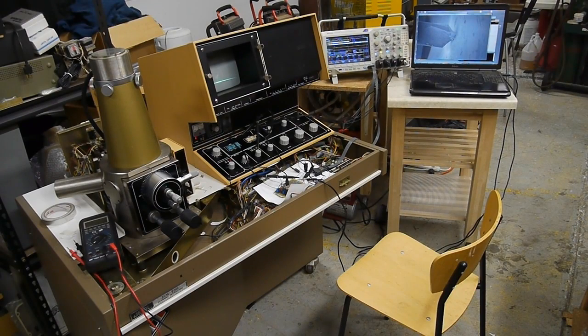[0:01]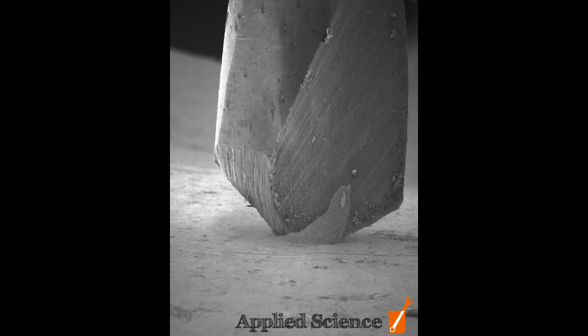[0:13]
Today on Applied Science, I'm going to describe how I built an image capture system for this vintage scanning electron microscope. This allows me to connect a modern computer to it and capture images directly. But first, let's take a look at an animation that I made today using this system.
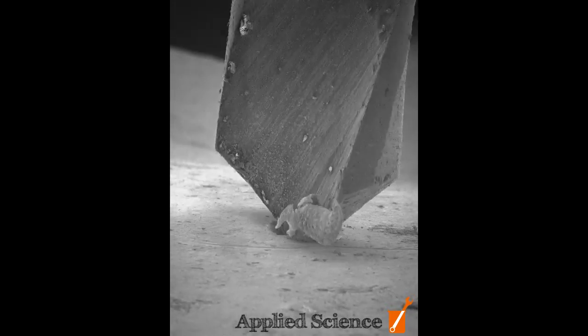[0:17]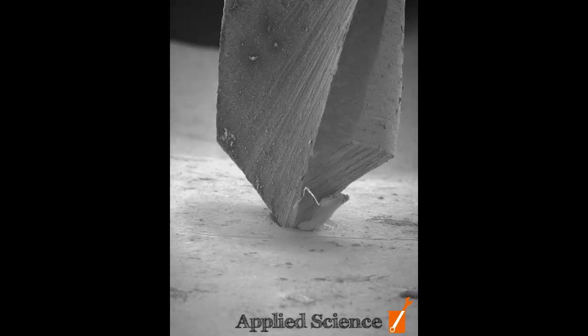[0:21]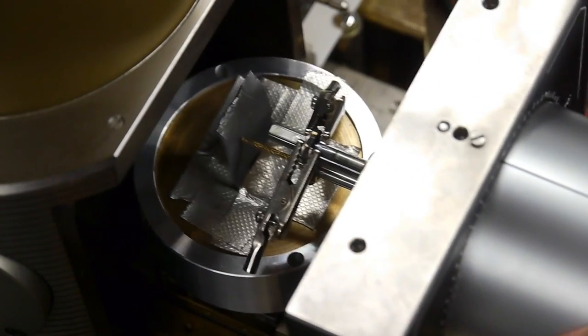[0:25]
This is a 2mm drill bit drilling into some lead metal. And I chose lead just because it's soft. I can't get a whole drill press inside the scanning electron microscope, so I'm basically using a makeshift drill press inside there.
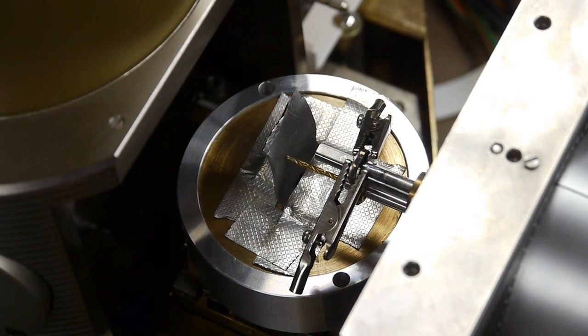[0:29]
So the basic idea of this image capture system is to start with an analog video signal that the SEM is outputting, and then digitize that using a microcontroller and send the digital values over USB to the computer. And then on the computer, I'm running a processing.org script that just displays the image in real time and optionally allows me to save the frames. So this way I can just, with two keystrokes, see an image and then save it, and then advance the SEM so I can get an easy sort of animation going.
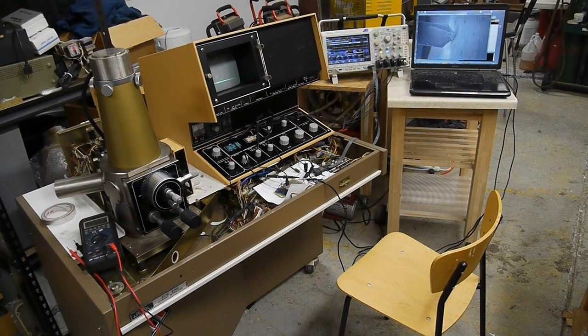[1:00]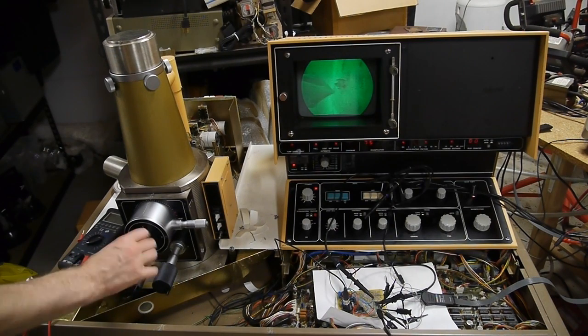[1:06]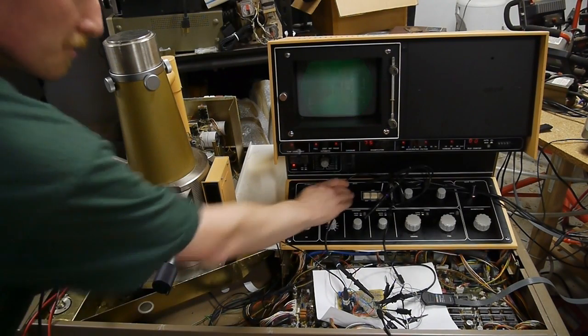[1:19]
Okay, so let's talk about that analog signal. This microscope is capable of capturing images in real time. So if I move the drill bit inside the microscope, you can see on the screen it's updating at full speed. It's about 30 to 60 frames a second. But if you want a really high resolution image, we have to slow the scan way down. So the scope comes with this setting, and as you can see, it's building up the image line by line, and the whole thing takes about 10 seconds.
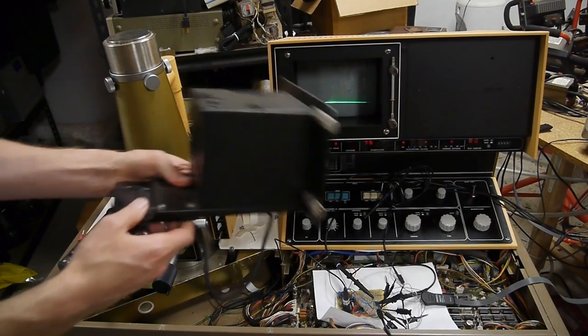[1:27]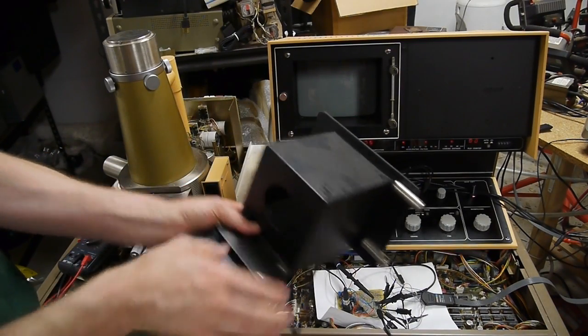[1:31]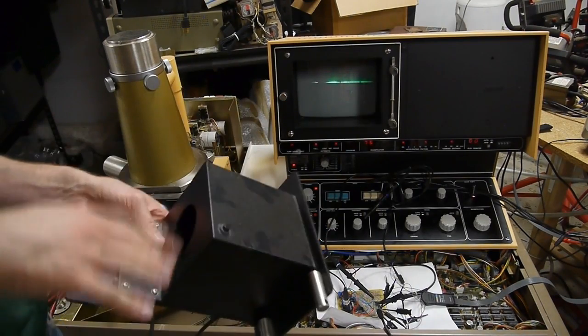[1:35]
So back in the day, the way that you would actually make an image out of that is to hook up a Polaroid camera to this and then mount the camera to the front of the screen and let it expose the film a line at a time. But of course, we have better technology than that now, so let's talk about today's solution.
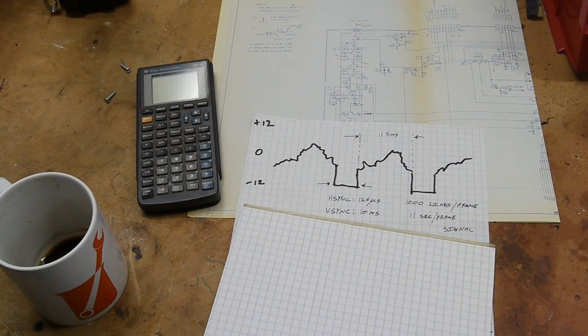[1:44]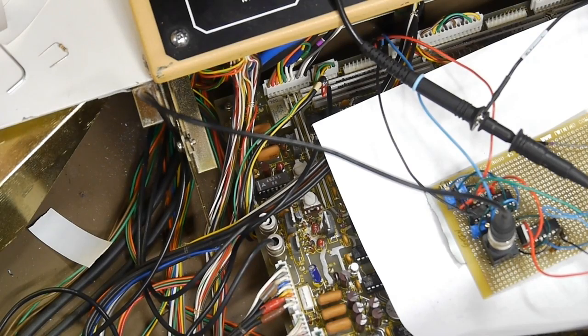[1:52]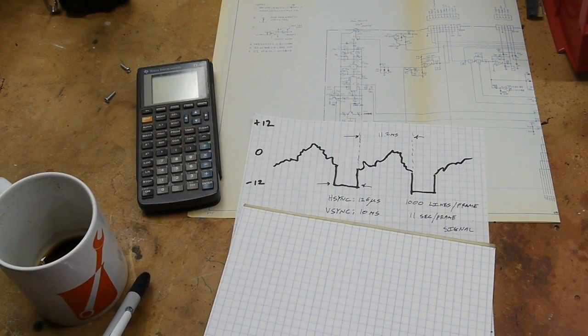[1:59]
Since the designers of the microscope thought that you'd be using a camera to capture this slow scan image, unfortunately there's no port on the side of the scope that has a signal we can use. So I had to go probing around on the circuit board with the oscilloscope, and with the help of the schematic here, found a signal that'll work just fine. It's actually quite a large range signal. It goes from negative 12 to 12, the reason being that the scope uses plus and minus 15 volt rails for its op amps, so that when the op amp is railed all the way, it puts out about negative 12, or at least in this case.
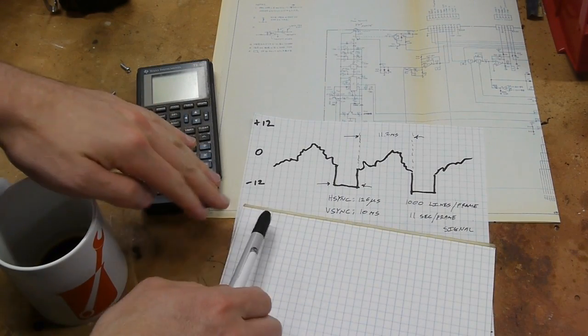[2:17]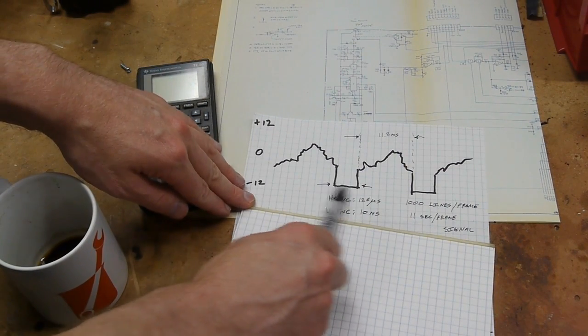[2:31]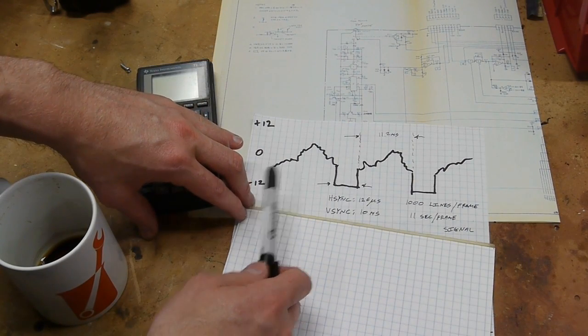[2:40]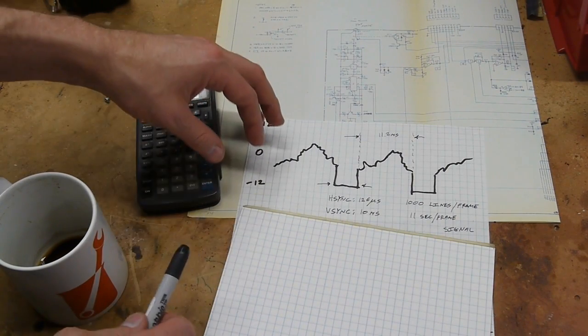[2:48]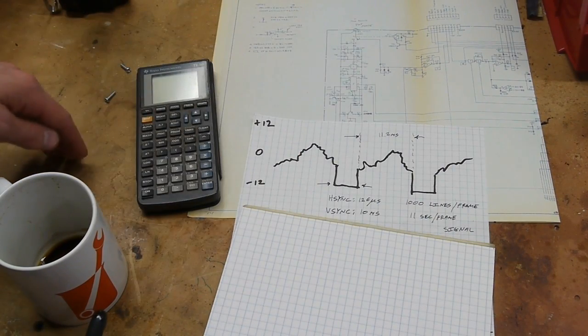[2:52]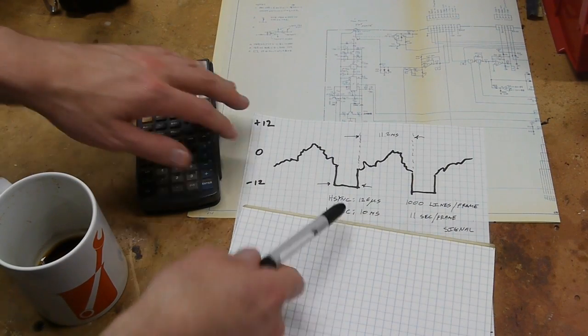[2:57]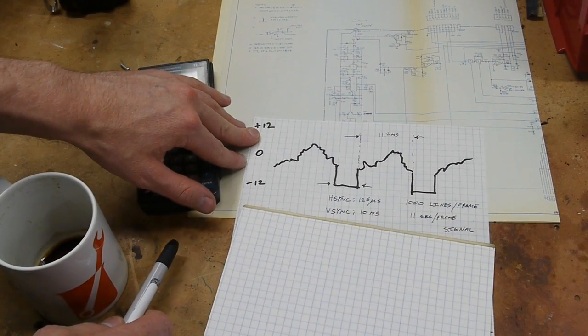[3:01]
The signal is composite, so basically it's a raster scan. It's left to right, top to bottom, just like you saw on the screen. And when it gets to the end of a horizontal line, there's a sync pulse. In this case, it's about 126 microseconds long. And during the sync pulse, the voltage is as far negative as it can go, about negative 12 volts. Then there's analog data for 11.2 milliseconds, and this repeats for every horizontal line. And when we get to the bottom of the frame, there's a much longer pulse of about 10 milliseconds. So if we know what the pulses are supposed to be, and we're listening to this signal, we can figure out everything we need to reconstruct the frame. This comes out to about 1,000 lines per frame, and so the whole thing takes about 11 seconds.
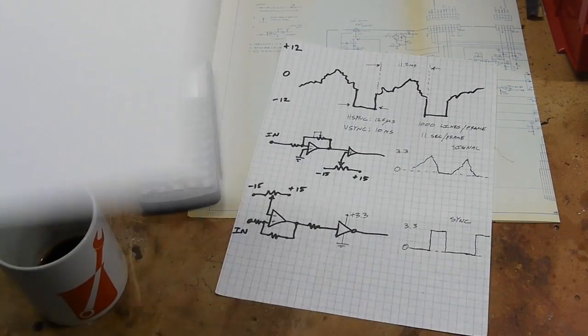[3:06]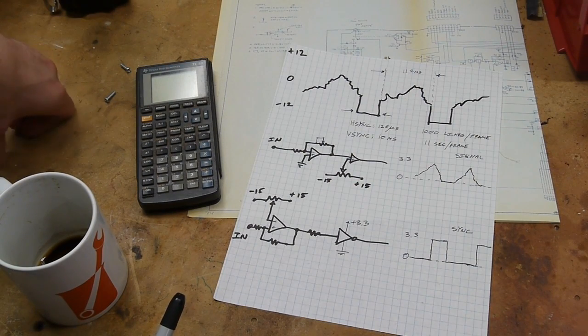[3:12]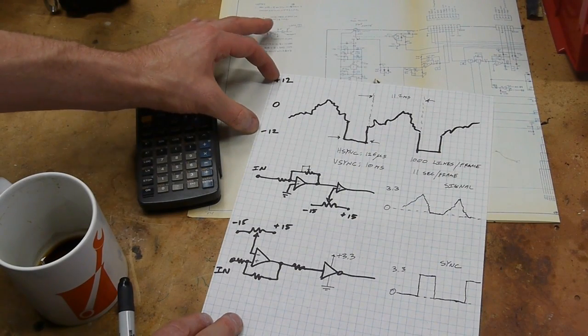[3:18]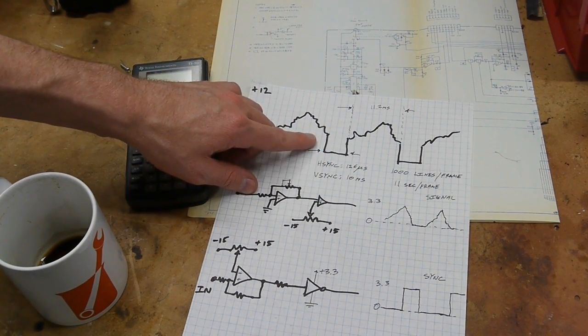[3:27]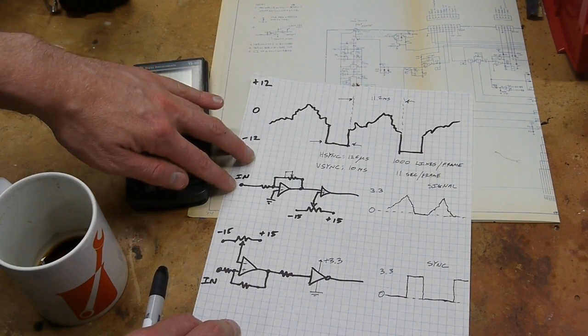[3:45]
So if we want to get this into a microcontroller, the first step is to voltage translate it into something that won't destroy the microcontroller. In this case, I'm using the Teensy LC, which is a 3.3 volt microcontroller. So what we want to do is translate this negative 12 to 12 volt signal into 0 to 3.3. And we also want to do something else. These sync pulses don't really carry any information about the image itself. I mean, it's timing information, but it's not visual information. So if we were to compress this whole negative 12 to 12 range down to 0 to 3.3, a lot of our dynamic range would be wasted on this pulse. So what I'm going to do is separate the signal into just video and then just sync.
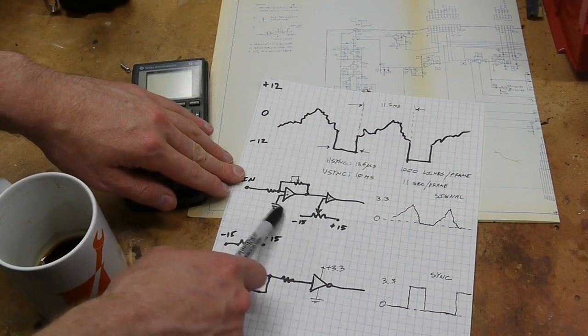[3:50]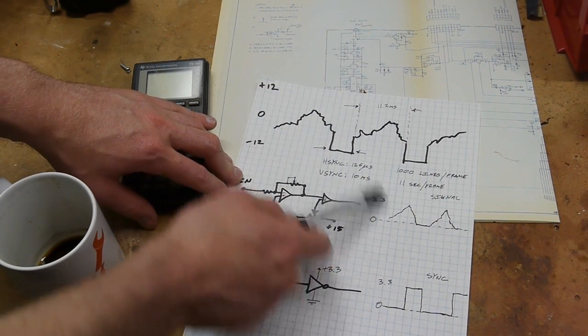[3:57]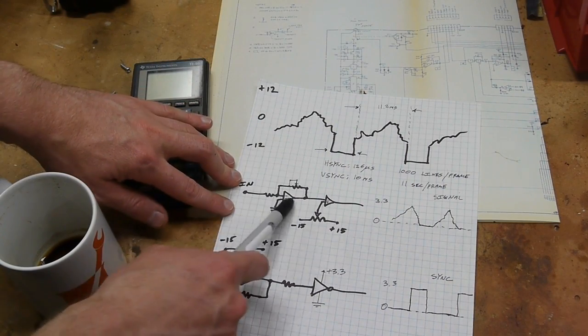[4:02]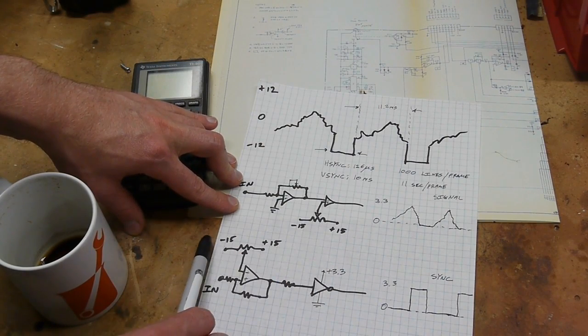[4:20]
So let's talk about the video first. I just ended up using two op amps. This could have been done with one, but with two, we invert the signal and then invert it back so that the sense of the signal is the same, not that it makes a huge difference, but whatever. So this first op amp is set up as a reducer. Usually you configure op amp circuits to amplify signals, but in this case, we're actually attenuating. And then the second op amp is an offset. So if we put the positive input on a potentiometer from negative 15 to plus 15, we can dial up where we want the offset to be.
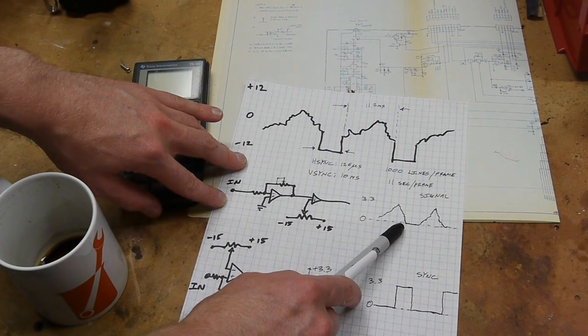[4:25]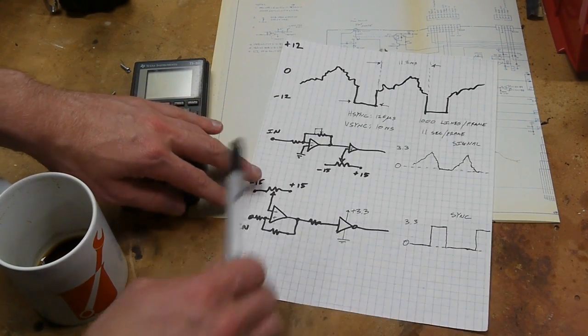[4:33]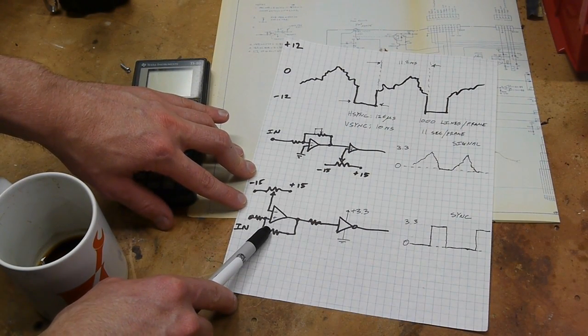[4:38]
So after these two, we get a signal that is just the video data, hopefully taking up as much dynamic range as possible, 0 to 3.3, and the sync pulse is not really there anymore. Then to recover the sync pulse, I have another op amp set up as a comparator.
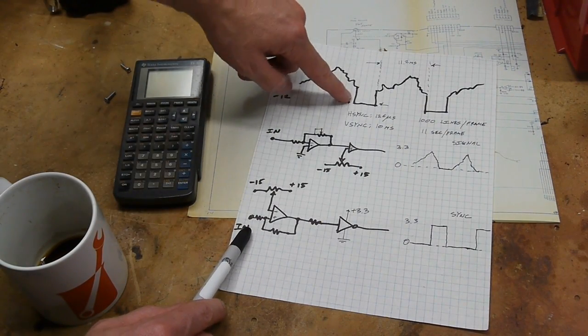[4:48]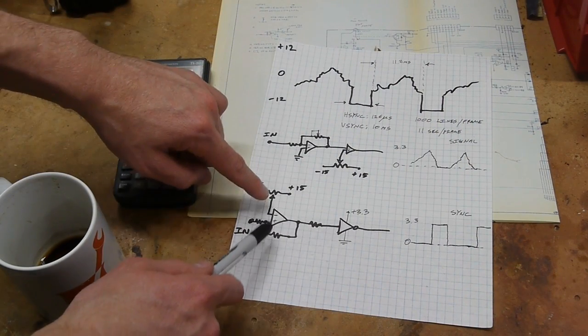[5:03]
So its negative input is a fixed voltage between negative 15 and 15, and then there's a little bit of positive feedback so that when the signal goes below the threshold, and I set the threshold to be something like, you know, negative 11. So as soon as this thing gets down to its most negative voltage, we know we have a sync pulse. And this comparator quickly snaps over. Now, remember that this comparator is still using plus and minus 15 volt rails, but we want to get the signal to be 0 to 3.3.
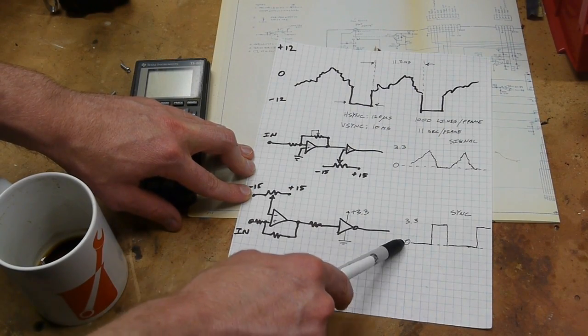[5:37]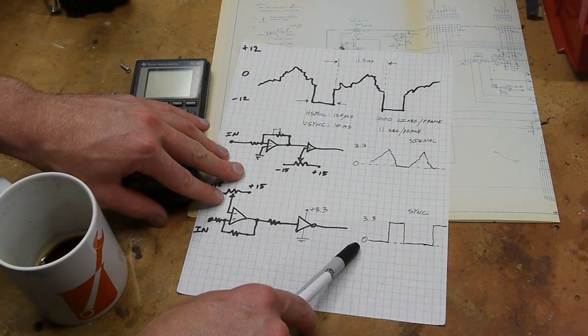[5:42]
So what I did is I used a 74HC series inverter, and the datasheet even says that this thing is set up with protection diodes specifically to convert high voltage systems into low voltage systems. So I powered the inverter with the 3.3 volt rail from the microcontroller, and then put a resistor here to limit the current, so that even though this thing is snapping around from negative 15 to 15 almost, when we get through the inverter, we're down to just 0 to 3.3. So now we have our digital sync signal, which we can put into a digital pin on the microcontroller, and then we have our analog signal, which we put into an analog pin.
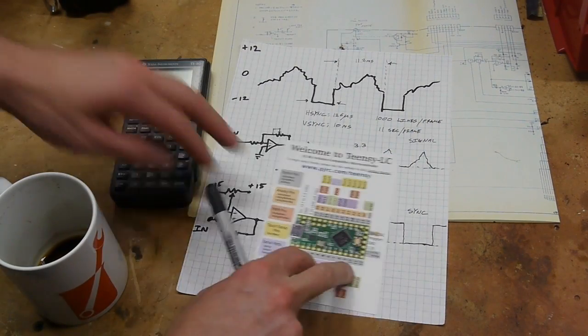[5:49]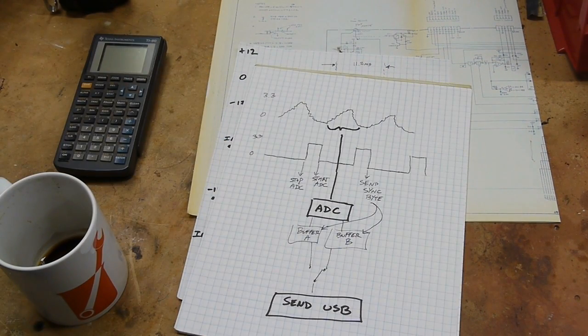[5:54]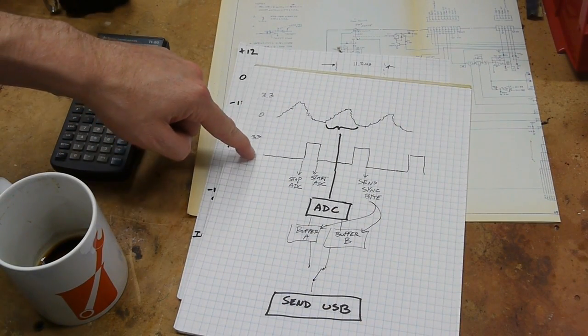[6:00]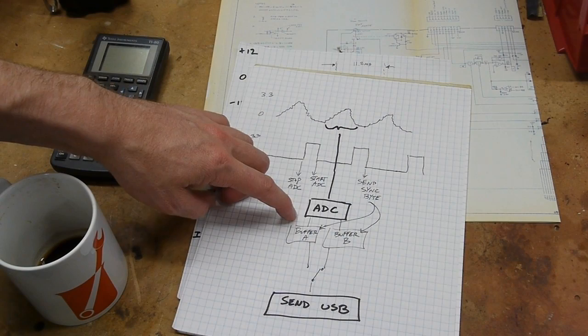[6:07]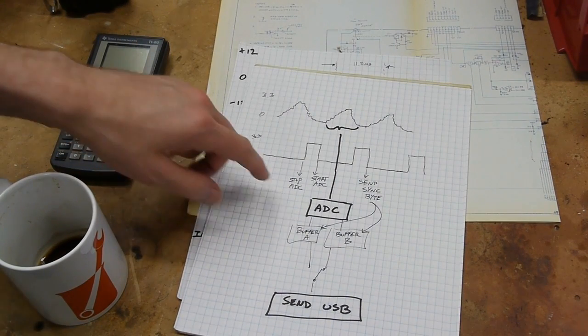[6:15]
And like I said, I'm using the Teensy LC, which gives us a bunch of options here. Here's a flowchart showing what the firmware does. We have our two signals in, the video analog signal and the digital sync signal, and we want to go through all this and have USB data out. So the way this is set up, the ADC is in free running mode, and it's running at about 142 kilohertz. Actually, it's averaging four samples, but we're getting a result from it 142,000 times a second. And what we want to do is stop the ADC at the start of a sync pulse so that when we restart the ADC, it will be nice and lined up with that falling edge of the sync pulse.
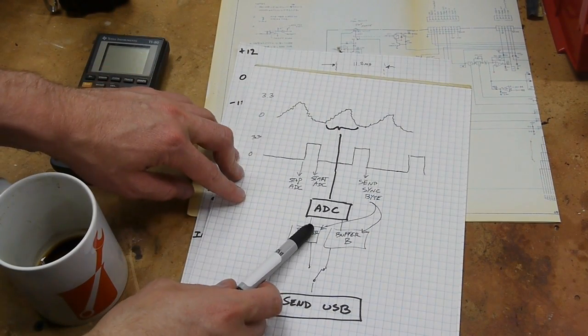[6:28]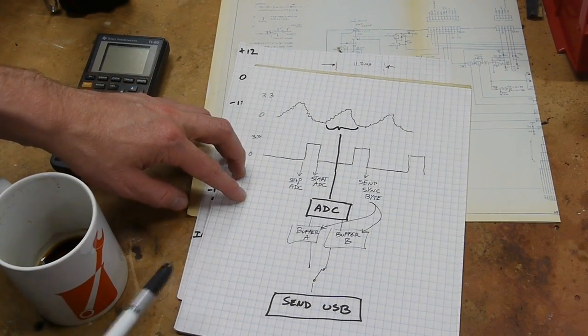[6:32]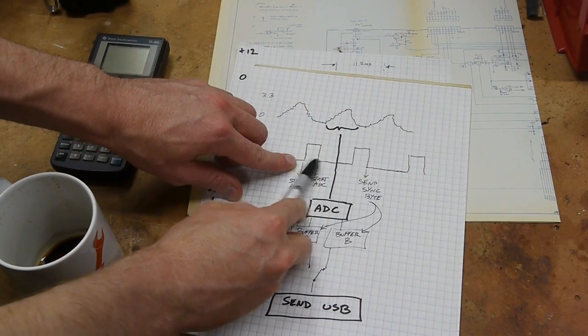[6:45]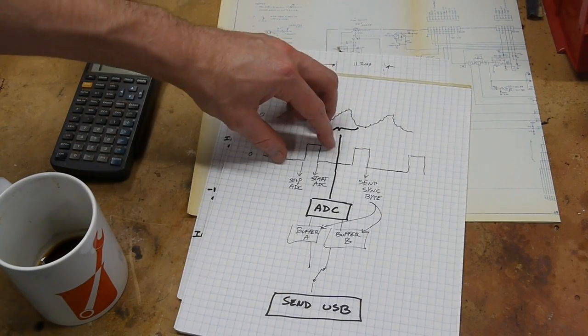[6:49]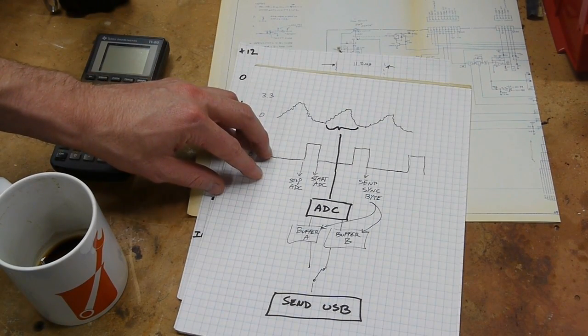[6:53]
Originally, I had the ADC free running all the time, and I tried to sync it up at the beginning of the pulse, but it didn't work very well because at certain stages of the ADC's function, you can't stop and restart it with a deterministic amount of time. However, if you stop the system here, then what we can do is just measure the pulse width using a timer function in the microcontroller, and then we'll know how long the pulse was, and we can restart the ADC and get very deterministic timing.
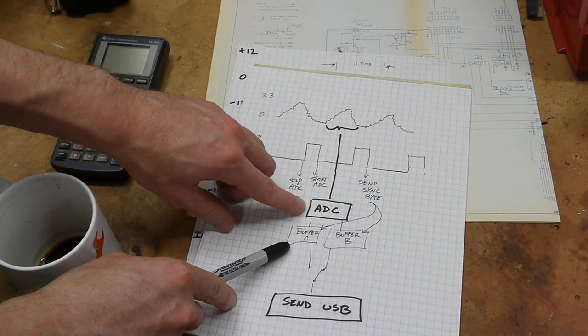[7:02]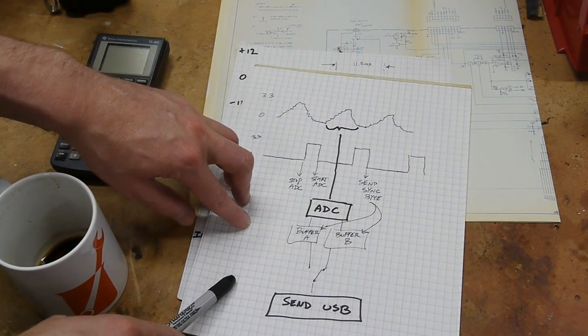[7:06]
Another trick I ran into is that since we have data coming from the ADC so fast, if we just filled up a buffer from the ADC and then sent that out over USB, we would end up with some contention there eventually because the USB would be wanting to send the same data that's being written in by the ADC. And I think you could implement this with a loop buffer, but I still couldn't quite figure it out. Since they're both reading and writing so quickly, you end up with some weirdness there.
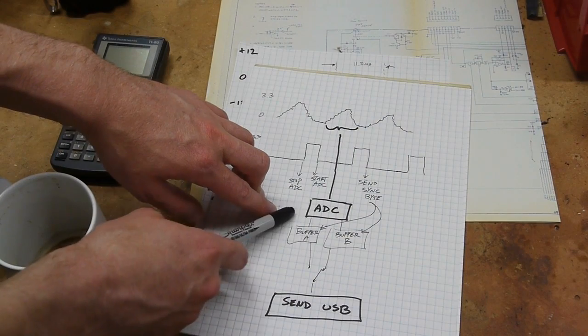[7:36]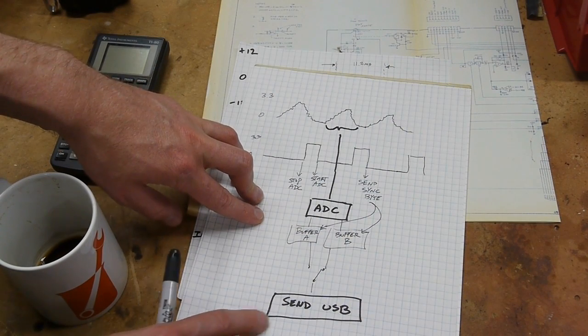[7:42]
And another nice thing is that we'd like to fill up a buffer of at least 64 bytes before we actually do the USB transaction. It's super inefficient to collect a sample and then send that one byte, and then collect another sample and send that next byte. So the code that operates the USB transaction would much prefer to have a 64-byte buffer or larger to work with. So the way that I solved this problem was to use ping-pong buffers.
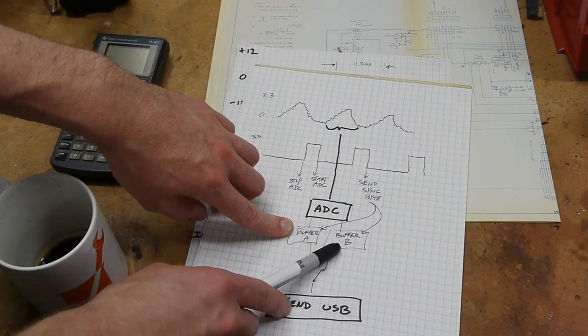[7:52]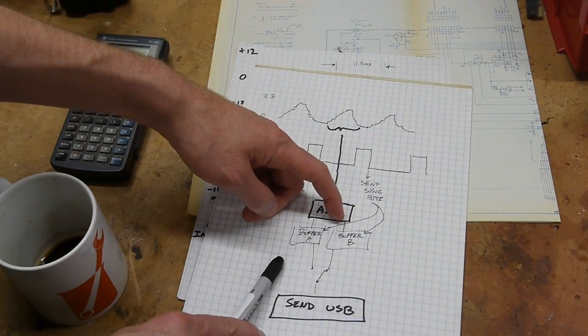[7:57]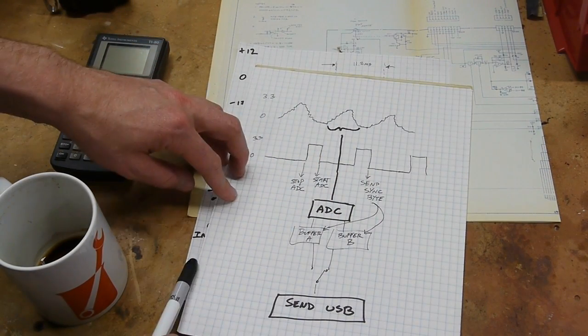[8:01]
So the ADC is currently filling buffer A, while buffer B is being drained by the USB command, and then it, with interrupts disabled, snaps over, so it ping-pongs to the other side. And this seems to work really well. I don't know if there's an even sneakier way to do it, but the code is actually quite compact, and I'll post a link in the description so you can take a look.
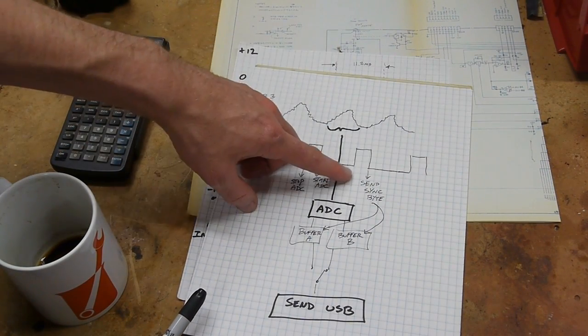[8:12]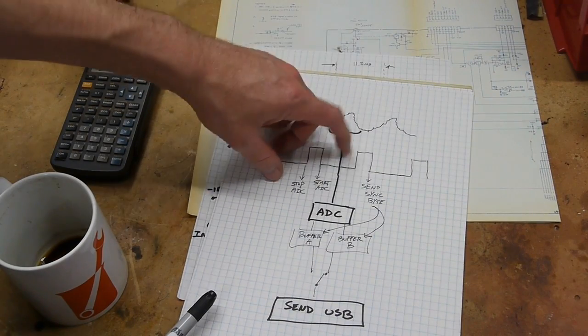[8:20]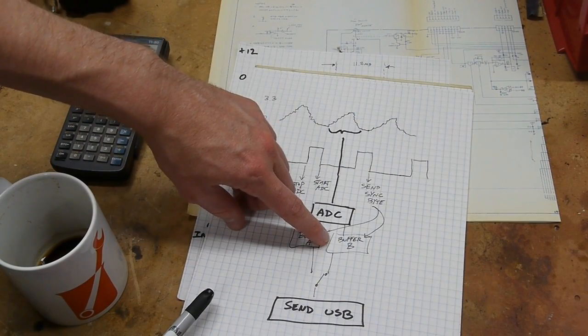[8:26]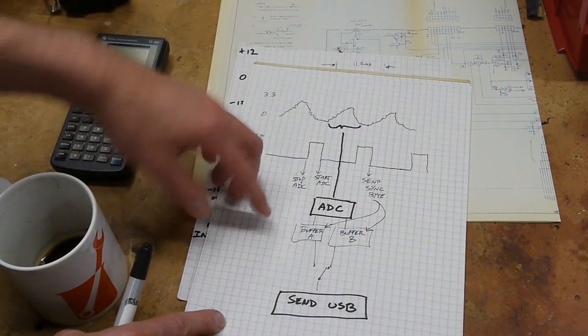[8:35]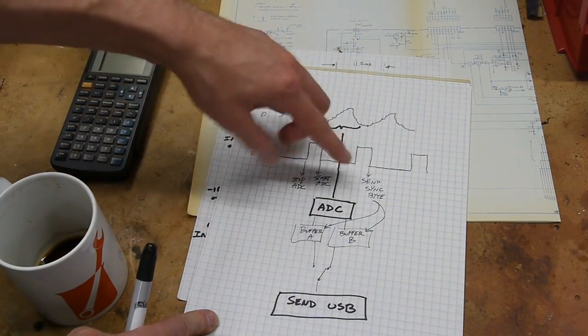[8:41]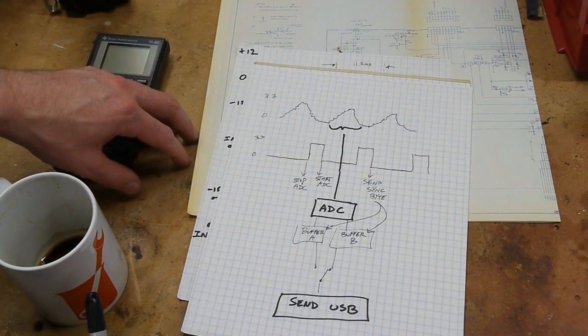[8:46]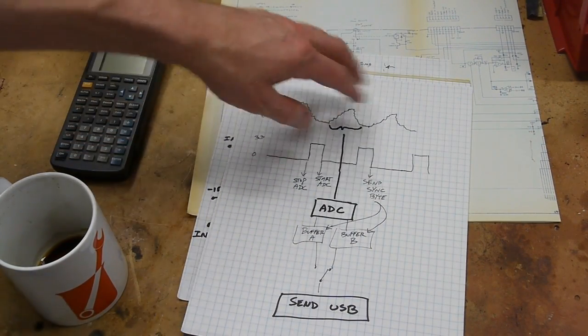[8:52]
And then the last bit is just to figure out how long this pulse was, and I used the elapsed micros variable that is included in the Teensy libraries. And if it's over a certain amount, like if it's big enough to be a vertical sync pulse, then it dumps a different byte into the buffer, whereas if it's a short one, then it dumps, you know, a horizontal byte, basically. The ADC is running in 8-bit mode, and all of the values except 0 and 1 are valid data values. I reserved 0 and 1 to differentiate between the types of sync pulses, and probably eventually later I'll have other bits of encoding, but this just keeps things really simple. So it's one sample, one byte, just sent right over the USB, and then there's two special bytes for the sync.
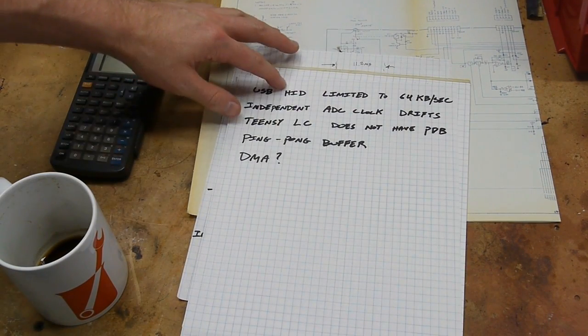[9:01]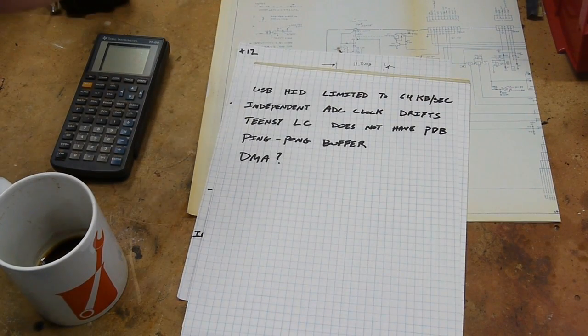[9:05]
Here's a couple other things to keep in mind if you're doing a similar project. USB HID is limited to about 64 kilobytes per second. Now, it is guaranteed bandwidth, so 1,000 times a second you can send a 64-byte packet, but in this case we're going a bit faster. We're already up to 142 kilobytes per second, so we can't use HID. And if we use an emulated serial port, that's fine.
It's not guaranteed bandwidth, so if you plug a bunch of other stuff onto that same USB, you may run out of bandwidth, but in this case we're totally fine. And it's running at about 142 kb per second.
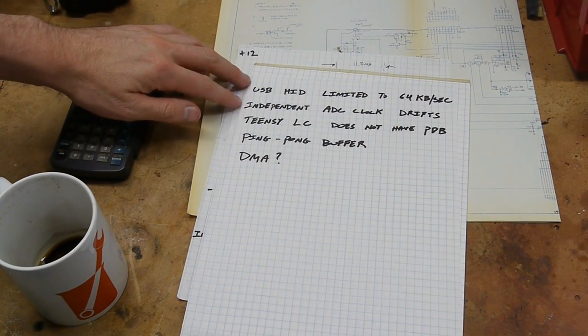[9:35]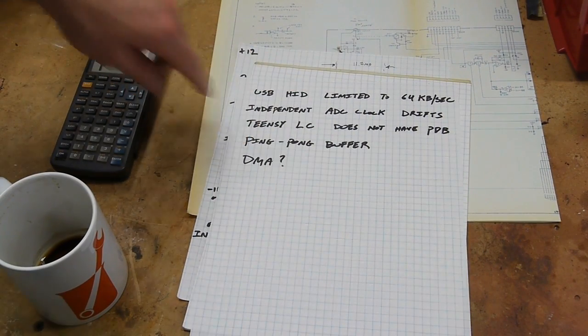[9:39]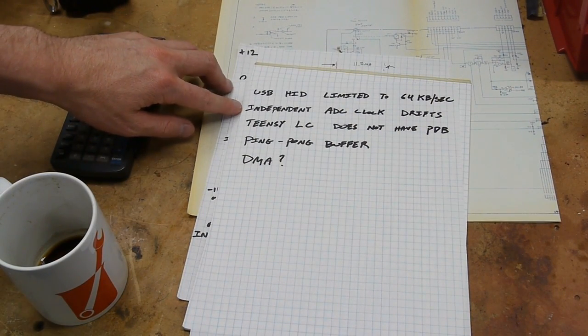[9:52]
I originally started using the independent ADC clock that the Teensy has, or that the Freescale microcontroller has, and it says, oh, you should use this alternative clock if you're worried about noise coming from the system clock. And I thought, oh, great, well, that's just what I want. But as it turns out, this is actually probably an RC timer inside the microcontroller, and it drifts like crazy. So I couldn't use that, and I switched back to the system clock.
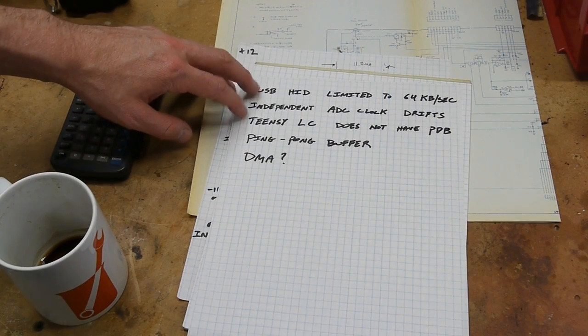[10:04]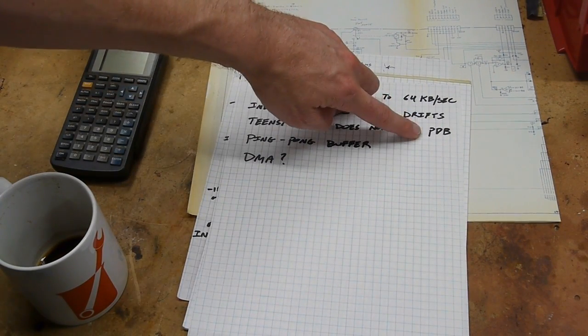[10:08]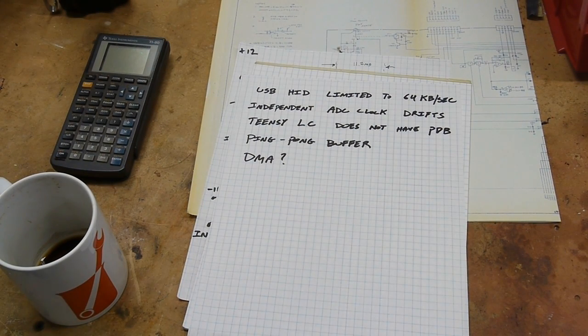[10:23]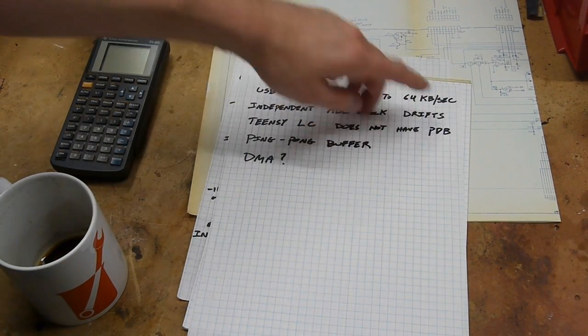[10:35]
Also, if you search around on the net about using the Teensy for projects like this, like audio projects and things like that, you'll find that people are talking about this PDB, the programmable delay block, which I had never heard of before reading about this in the Freescale controller. I thought, well, if you want something with accurate timing, you would just set up a timer and use an interrupt and then put your code in there. But if you need something that's really deterministic, I mean really accurate, you can't trust the interrupts because there could be an undetermined delay when the interrupt fires, and so it leads to variable timing. So apparently this PDB is something that you can set up in the microcontroller that really runs very deterministically, and it triggers the ADC without really any code happening.
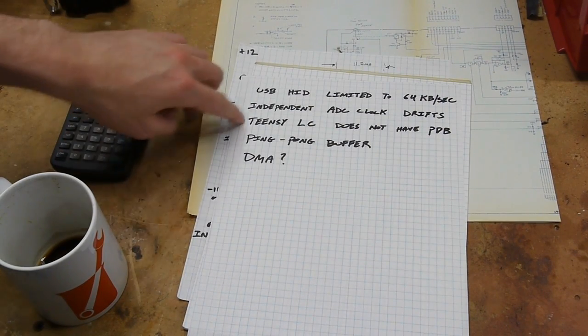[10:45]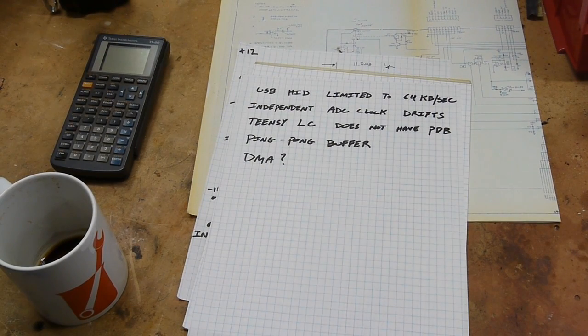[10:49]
And the Teensy 3.1 has this, but the Teensy LC doesn't. So when I started this project, I thought I had a 3.1 on the shelf, but I didn't. I had an LC, and then I started coding it and thought, oh, well, now it's a challenge. I get to make it work without the PDB. So by playing with interrupt priorities and writing the code as efficiently as I could, I actually got it to be very, very consistent. It's performing as well as it possibly could. It's not dropping samples. So I thought that was a bit of a win.
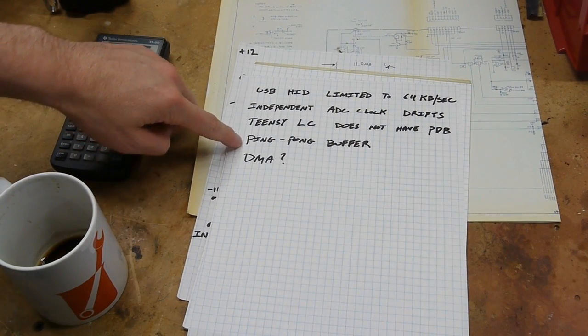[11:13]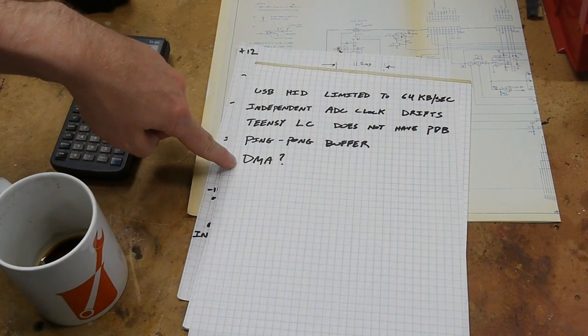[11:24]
The ping pong buffer I described, like I say, I don't know if a circular buffer would be more elegant or whatever, but you can check it out and see what you think of my implementation there. And then finally, why am I not using DMA? Most of the resources about Teensy DMA refer to the 3.1, and the DMA controller on the LC is different, and I didn't really feel like learning about it, and I got enough performance out of the code the way it's written now, so I just went with that.
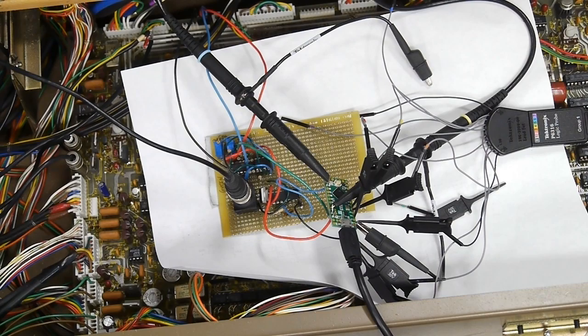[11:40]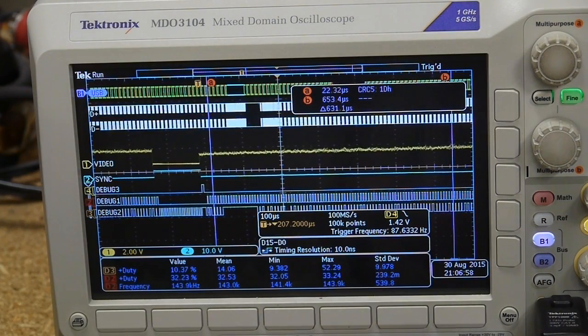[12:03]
Here's the setup. We've got the composite video signal coming in from the SEM here, and we have the USB connection going out here. And then to power the board, I've actually just tapped onto the circuit board that's part of the SEM, and we're getting ground plus and minus 15 volts out of it. And as you can see, the thing is completely probed up, so let's take a look at it on the scope. Here we can see everything on the oscilloscope.
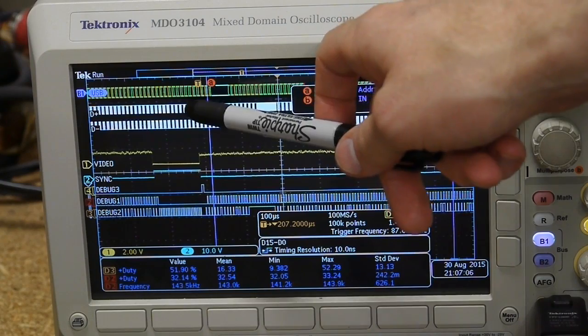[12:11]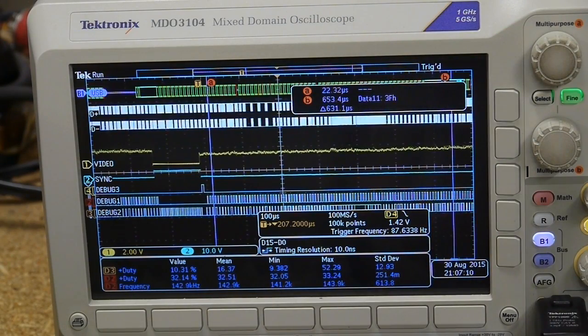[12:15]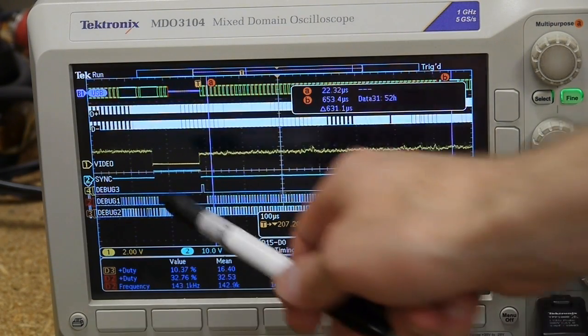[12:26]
So the two analog channels, video and sync, are the two analog inputs to the microcontroller. And then we have USB on the top here, and the scope is actually decoding the USB data in real time. And then we also have debug 1, 2, and 3 down here, which are digital signals that are generated by the microcontroller. So if you're really interested in this, you can download the code that I posted, and the comments actually indicate what debug 1, 2, and 3 are.
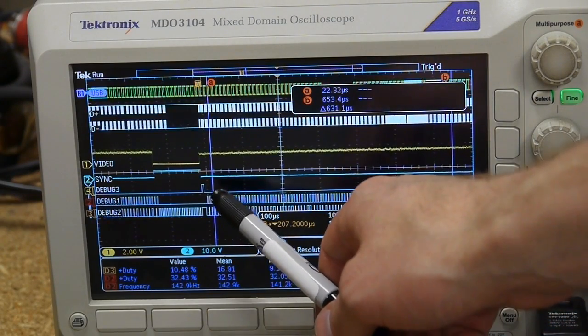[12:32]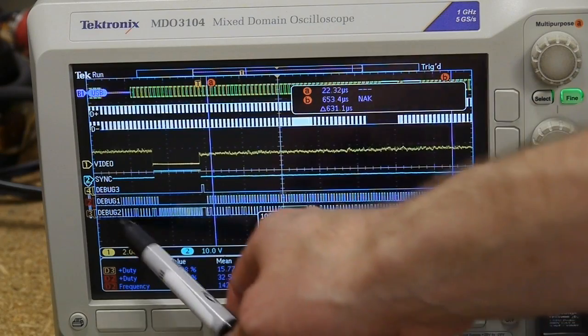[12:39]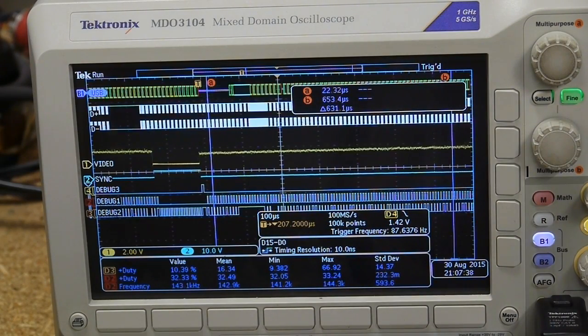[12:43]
So briefly, debug 3 is the interrupt service routine that handles the sync pulse. Debug 1 is the interrupt service routine that handles the analog digital converter. And debug 2 is the main loop of the program where we actually send the data out USB. So what's neat is that we can use the scope to measure the duty cycle and see how much time is being spent by the microcontroller in each of these places.
So as you can see, debug 1 has a duty cycle of about 32%, which means that the processor is spending 32% of its time in the analog digital converter interrupt service routine, which is kind of high. I mean, that's a lot of time. Luckily, the job of this processor is just to digitize stuff and send it to the computer, so it's not too surprising that it's spending a lot of time there.
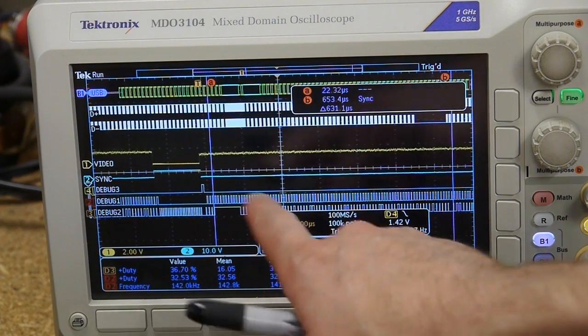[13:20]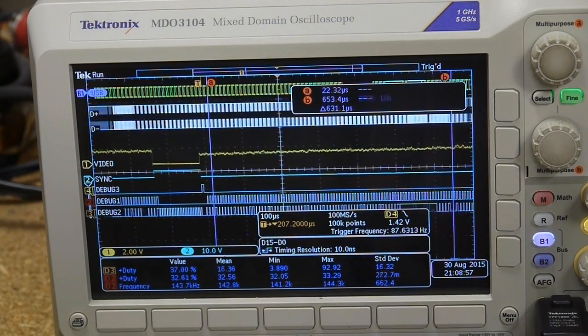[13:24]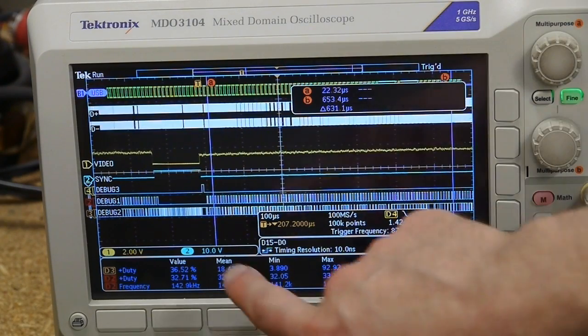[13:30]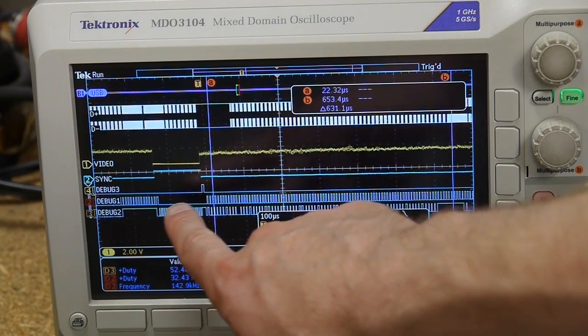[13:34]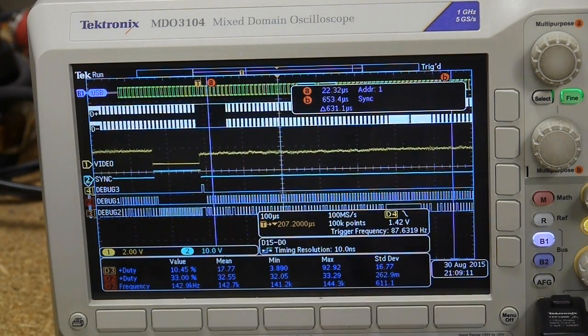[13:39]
We're also measuring the frequency, and so we can see that the interrupt routine for the analog digital converter fires at about 142 kilohertz, which is the sample rate of this system. These measurements are also being made just between the cursors. So you can see, as I was describing, when the sync pulse comes, we actually stop the ADC here and then restart it at the end of the pulse, so that we have a good sync up here.
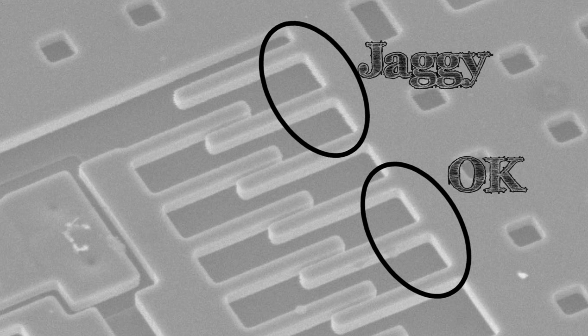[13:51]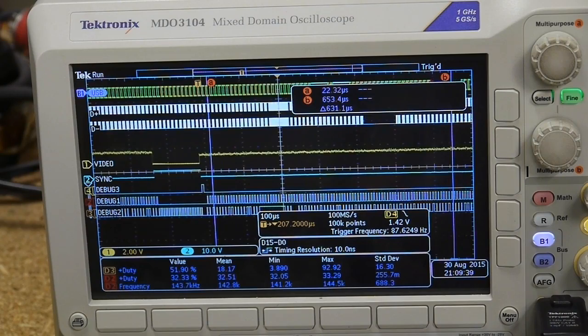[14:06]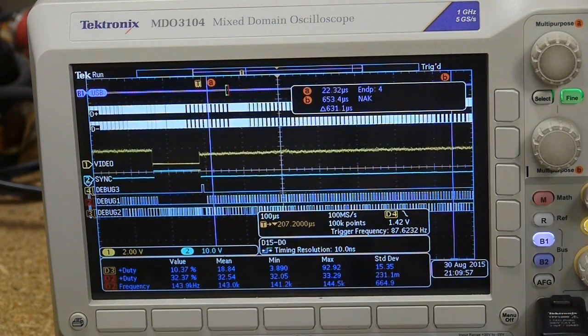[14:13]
So let me show you what happens if we don't have good sync up. This is an image that shows this jaggies problem. The image is sort of jagged up there. And the reason is that on some lines, the ADC would be restarted a few pixels too early or too late, depending how you look at it. It's kind of a small image problem, but I got to the point where I realized I could fix it, and so then I had to. And syncing up, or stopping the ADC and then starting it at the end of the sync pulse, solved the problem very well. Let's take a look at some of the data that's flowing through USB.
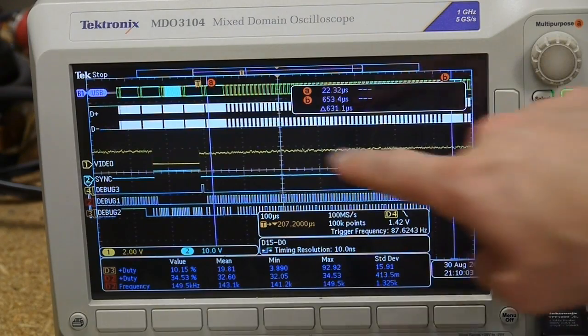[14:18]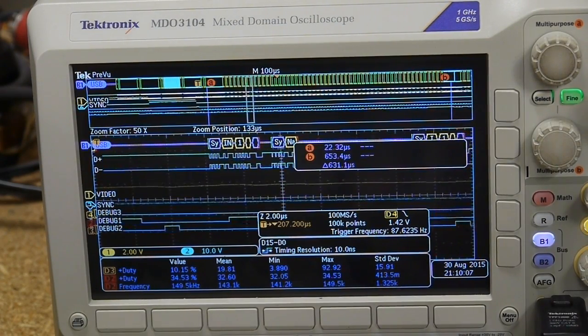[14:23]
So if we just do a single acquisition here, the blue areas are data. If we zoom in, we can scroll over to those transactions. And then if we look in here, each one of these is one of the bytes that are being sent through the USB pipe. If we ever see a zero in here, then we know that's the sync pulse. Of course, there's only one, and so it's very hard to see. The scope has the ability to be triggered off of data that's flowing through the USB. So you can tell it, trigger when you see a zero in one of these. But I actually haven't got that to work, so I have to ask a tech expert how to set this up. Or it seems like I've got it, but it's just not triggering.
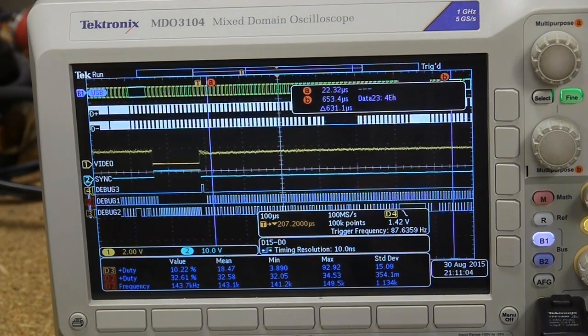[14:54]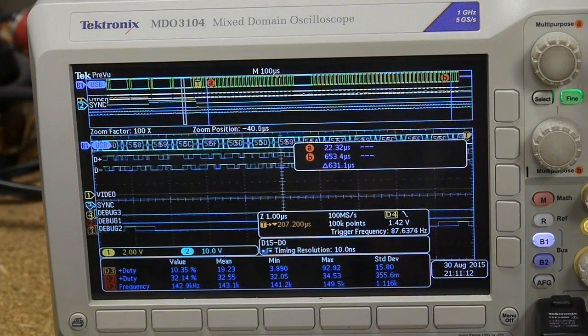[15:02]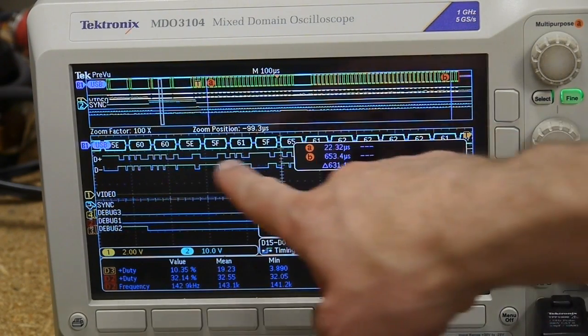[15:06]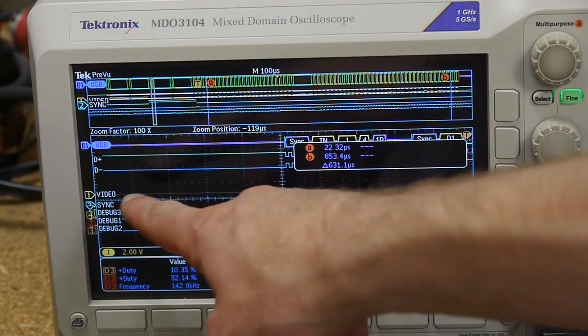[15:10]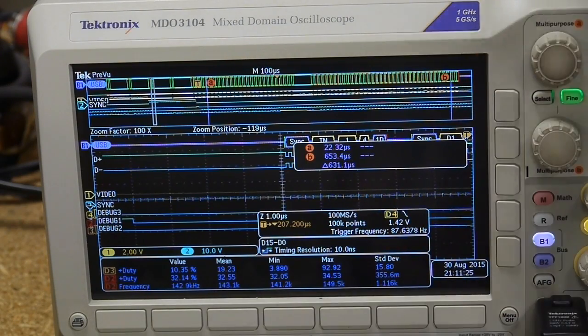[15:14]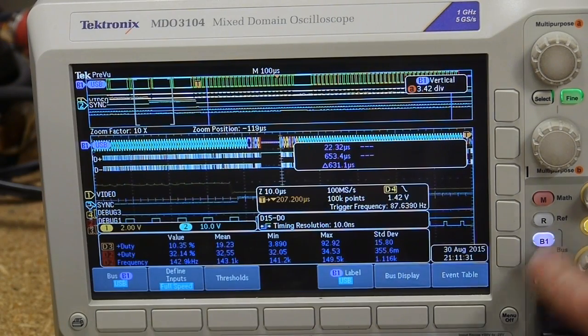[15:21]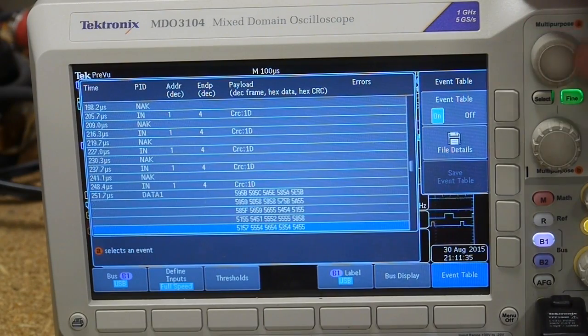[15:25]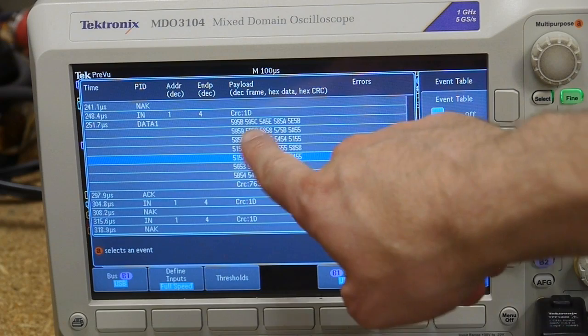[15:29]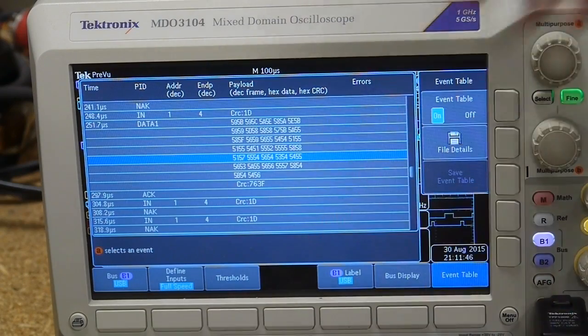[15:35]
Another thing that's helpful for debugging is if we get a single acquisition, we want to look through the data, but we don't want to use the magnifier. This is actually pretty handy if what you're looking for is time sensitive. So I can use this jog wheel to scroll through and say, oh yeah, that's the value that corresponds to the thing. And since we're also recording the analog value, you can look for a blip that may have happened in the analog channel and look for it in the digital. But alternatively, we can pull up the event table. This is a listing of all the data that's gone through that USB pipe in this particular acquisition. We're sending individual bytes, so half of each one of these nibbles here is a sample. We could look through here and look for a zero and that sort of thing.
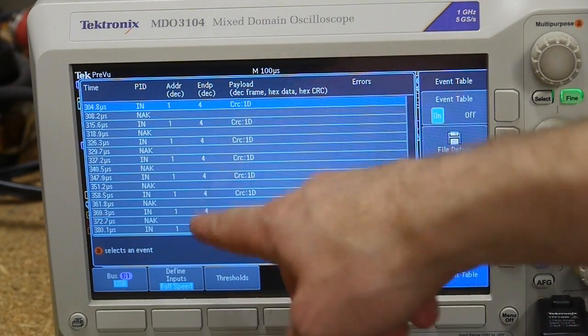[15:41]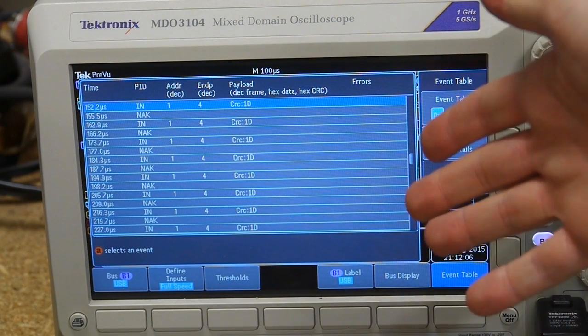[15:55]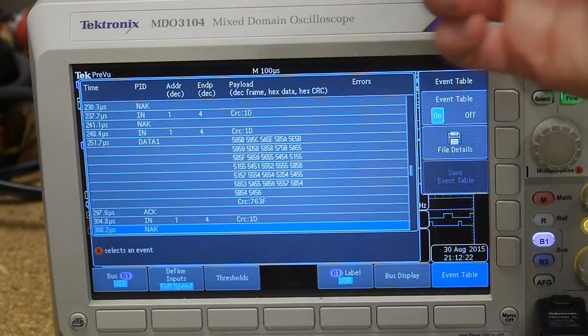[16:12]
You'll also notice that there's a lot of these NAK packets. Remember that USB is entirely controlled by the host. So the client, the microcontroller, can't tell the host that it wants to send data. It has to wait for the host to ask. In this case, since the host is pulling in the data as quickly as possible, it keeps sending requests to the microcontroller saying, do you have any data? Do you have any data? And all of these NAKs are the microcontroller responding, no, my buffer is not full and I don't have any data to send. And then eventually, the computer asks and the microcontroller responds, yeah, the buffer is full, so I can send you all this stuff,
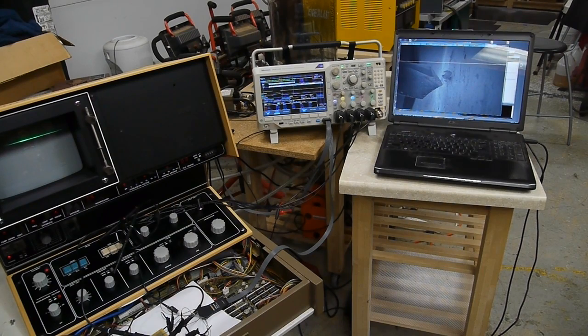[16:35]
which is why it's helpful to have the buffer always filled up to close to the 64-byte maximum. That way, one transaction is full, whereas if you send each byte all by themselves, you end up wasting lots of transactions that are just carrying one byte when they could have been carrying up to 64. So here's the whole setup.
You can see the computer tracks right along with the SEM in terms of the scanout, and the update rate is truly real time, so you can see exactly what the SEM is transmitting, because the transfer rate isn't really that high. So after all that, you might be wondering, why didn't I just use the microcontroller to actually generate the scan rate instead of just passively taking this slow 10 seconds per frame scan? Yeah, that's definitely a phase two type thing. Using the analog outputs of the microcontroller to generate the X and Y scan would actually be helpful. But at this point, I'm mostly just interested in making animations, and if I can get away with just using the existing scan rate, then that's okay.
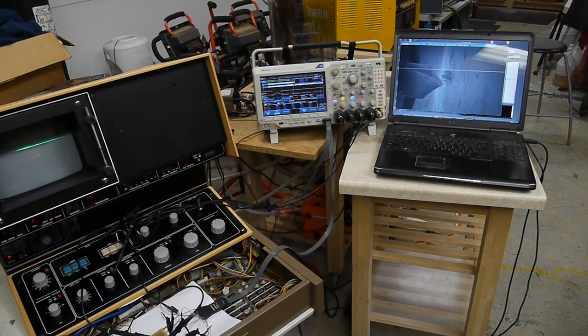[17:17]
But I would like to experiment with high-speed acquisition, and we'll have to generate my own scan rates for that.